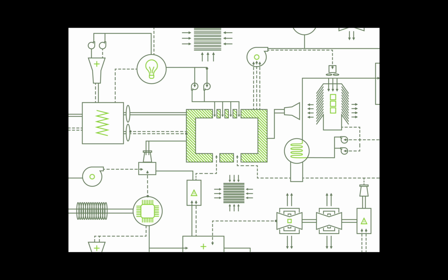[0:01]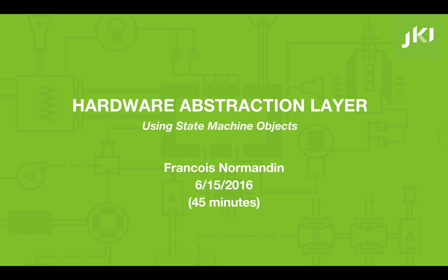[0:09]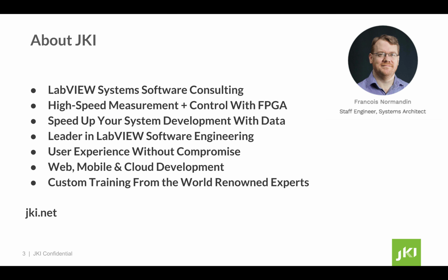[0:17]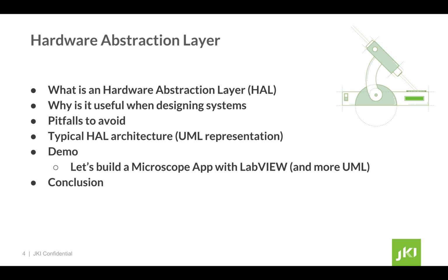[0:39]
As part of this presentation, I'm going to first define what is a hardware abstraction layer, why it's useful when designing systems, some pitfalls to avoid, and typical architecture for hardware abstraction layers, including some UML representations. Finally, I'm going to build a Microscope app with LabVIEW in order to demonstrate how to implement a hardware abstraction layer. For that, I'm going to use state machine objects.
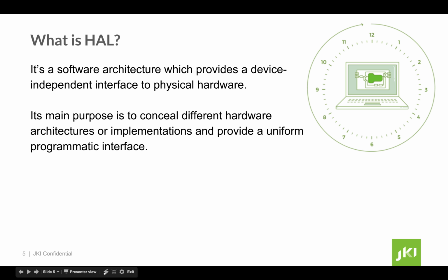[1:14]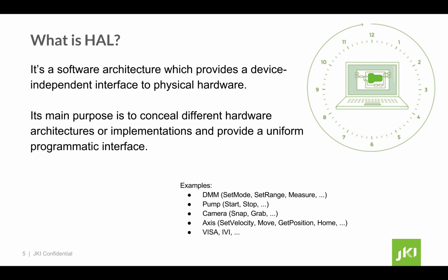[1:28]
What is a hardware abstraction layer? It's a software architecture which provides a device-independent interface to physical hardware. Its main purpose is to conceal different hardware architectures or implementations and provide a uniform programmatic interface. Some examples of hardware abstraction include general concepts like a multimeter, or pump, or camera, or an axis. These very generic categories of instruments allow us to define a generic interface, such as start and stop, or measure, or grab image.
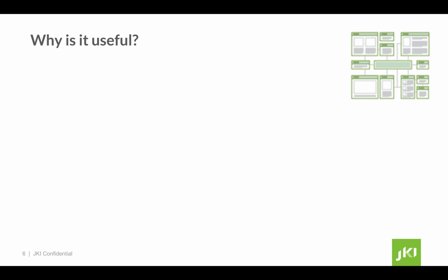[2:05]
Through the use of a hardware abstraction, we can then support multiple instruments of the same kind, and we can reuse different components in the same application. This leads us to why it is useful to use a hardware abstraction. First, it allows applications to access a common set of functionalities with little knowledge of the actual hardware implementation by virtue of communicating with hardware components in a generic way.
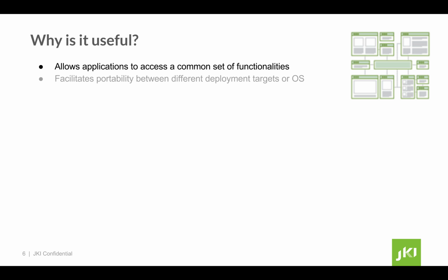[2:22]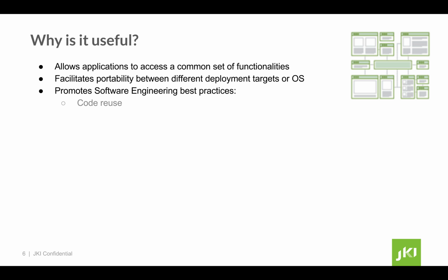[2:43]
It facilitates portability between different deployment targets or OSs. Think about CompactRIOs for your proof of concept and then migrate to a system on module or custom microprocessor-driven board. It also promotes software engineering best practices through code reuse. For example, parts of your hardware abstraction will be useful in test systems, others in manufacturing, QA and QC validation, engineering tools, and most likely in the final product itself. It's unit testable, and it's highly maintainable. And we'll see in the demo a concrete example of maintainability.
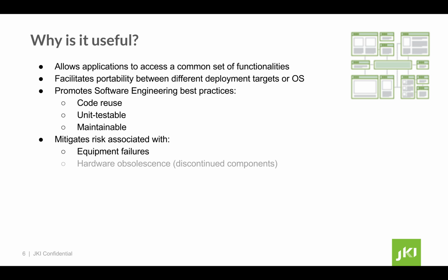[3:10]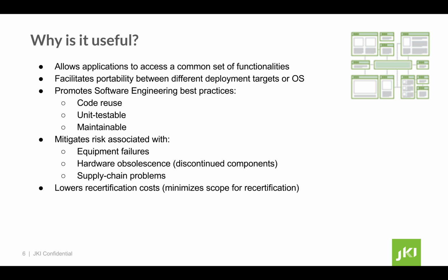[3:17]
It also mitigates risk associated with equipment failures, hardware obsolescence, like discontinued parts or components, and supply chain problems. For those in a regulated environment, it also lowers recertification costs by limiting the scope of tests to compliance for changing one component. And finally, it allows system, subsystem, and component response simulation.
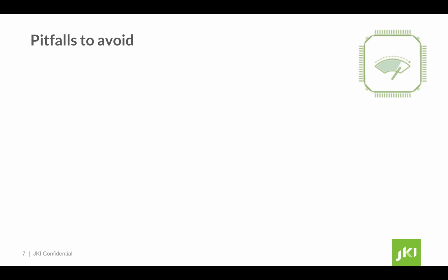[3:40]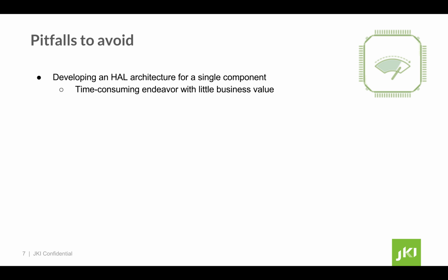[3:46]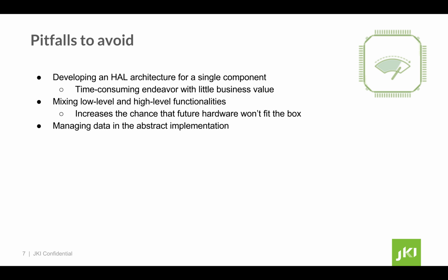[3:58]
Although a hardware abstraction is generally a good idea, there are some pitfalls to avoid, like developing a hardware abstraction architecture for a single component, which rarely makes sense. It's time-consuming and adds little business value. Mixing low-level and high-level functionalities increases the chance that future hardware won't fit in that nice little box that you've designed. Other pitfalls are managing data in the abstract implementation, or trying to make a HAL too generic on the first iteration.
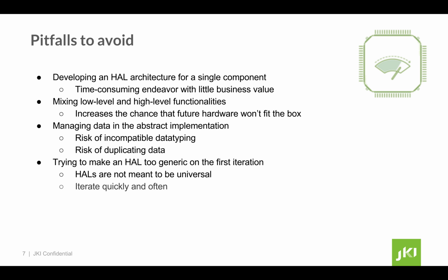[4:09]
HALs are not meant to be universal. If you find that your hardware abstraction doesn't fit your need, just duplicate the hierarchy and start fresh. For example, if we were to start with a sensor, a line CCD, and a scientific camera, they could all be considered digitizers, but it makes little sense from an API perspective.
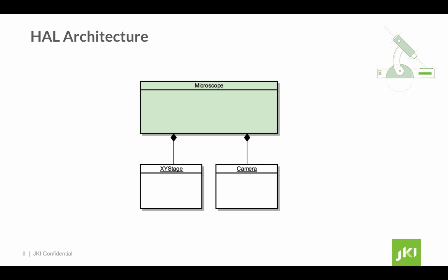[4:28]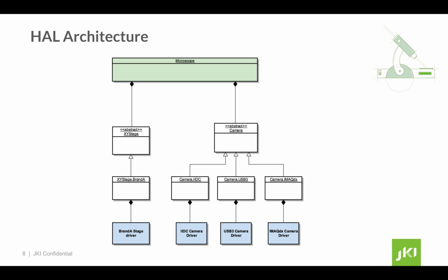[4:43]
Let's take the example of a microscope. At high level, it can be broken down into two subsystems, an XY stage and a camera. Expanding a bit more on that representation, let's explore how our subsystems can be broken down. Both the camera and the XY stage should act here as a generic interface to whatever type of camera or XY stage that we will face in the future. So it's really important at that point that we define an interface that makes sense.
Here we're expanding with different types of cameras and types of XY stage, each one will call a different driver. In that representation, we can see that the camera can be of 3 flavors. It can be an IIDC compliant camera, it can be a USB 3 camera, it can be an IMAQdx camera. Each of these specific implementations of a camera will call a different driver. Same thing for the XY stage.
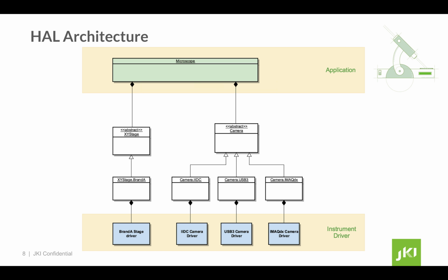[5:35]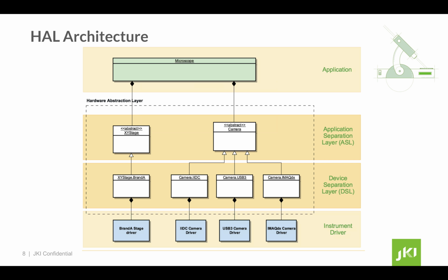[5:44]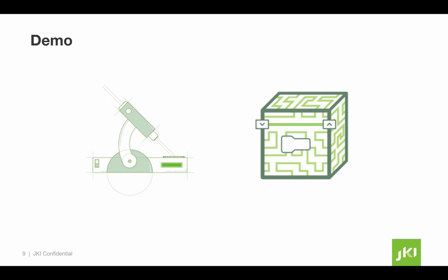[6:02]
To properly decouple our application and instrument drivers, we've just created a hardware abstraction layer. First, the application separation layer, which consists of abstract classes that provide a generic interface to the application. Second, the device separation layer, which implements specific functionalities and calls the hardware directly through the driver. And now it's time for a demo where I'm going to use state machine objects as an underlying framework.
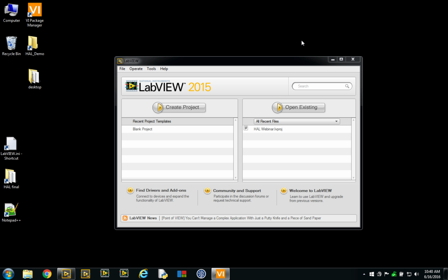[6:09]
As part of this demo, we're going to build a microscope, and let's pretend that we've got some requirements that require us to envision using a HAL, developing a hardware abstraction layer. For example, we've been instructed to build an instrument that will feature flexible hardware configuration, because already we've got to support multiple cameras in the lab, and we have 2 types of motorized stages for the microscope. So in the future, we want to be able to substitute hardware to achieve our objectives of performance improvement, cost reduction, but also we have different setups in R&D and manufacturing or production.
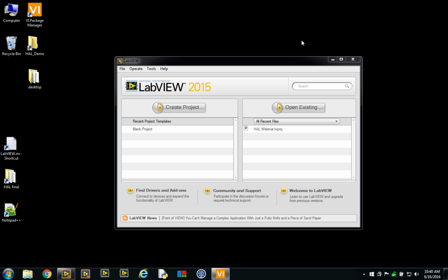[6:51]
We also have some hard requirements. At first, we need to use a certain specific camera, and for the purpose of this demo, I'll be just using my laptop camera, which I can control using IMAQdx driver. One of our goals will be to create very modular components so that we can test early and deploy.
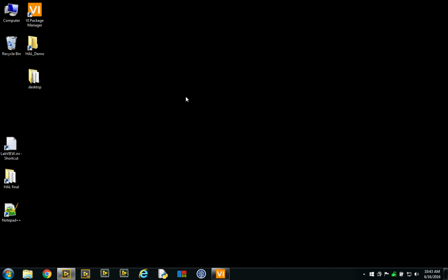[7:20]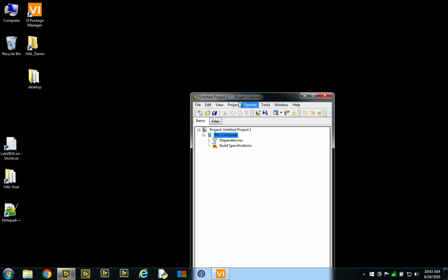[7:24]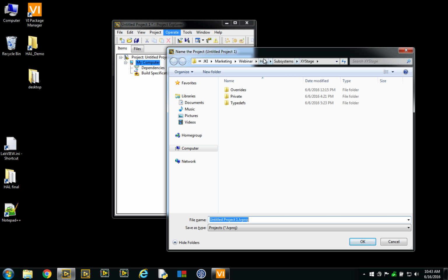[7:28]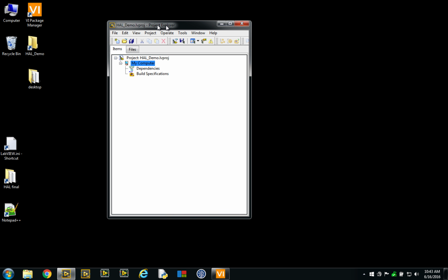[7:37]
Let's start by creating a new project. And for this, let's call this HAL demo. So the first thing I'd like to do is build a camera subsystem.
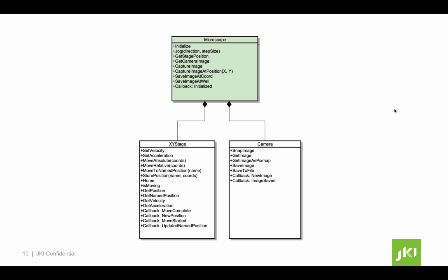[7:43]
So we're back with our UML diagram, which I've expanded with all the public functions that are going to be needed to implement our microscope. As you can see, I've detailed the camera with the public method snap image, get image as pixmap, save image or save to file, and I've also added some callbacks for events on new image and image saved. Same thing for the XY stage, where we're gonna have to set velocity, acceleration, move, all the usual stage or axis type of functions.
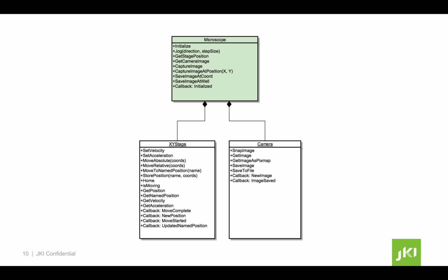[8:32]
At higher level, our microscope will need to initialize, jog to certain positions by calling the XY stage, get the stage position or get a camera image directly from calling the camera, but then also some composite functions like capture image at position, where it's going to call successively the XY stage, and then when the move is complete, we'll snap an image, get the image from the buffer, and wait for the image to be retrieved. And obviously save image at coordinates or at well in the case where I've got a well plate installed on my microscope. But those are features that both will call the camera and the XY stage.
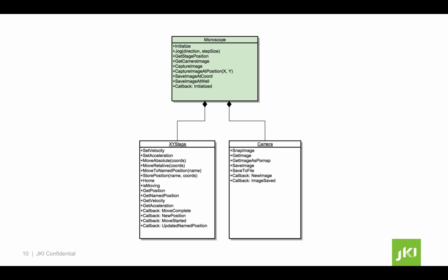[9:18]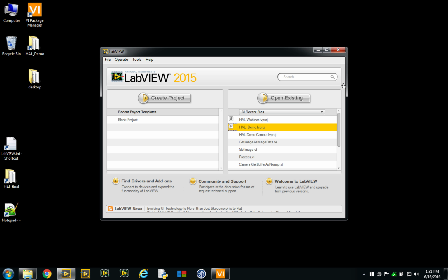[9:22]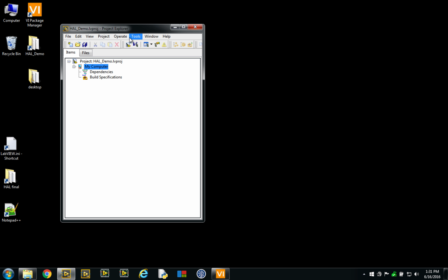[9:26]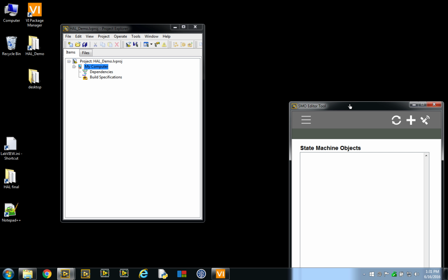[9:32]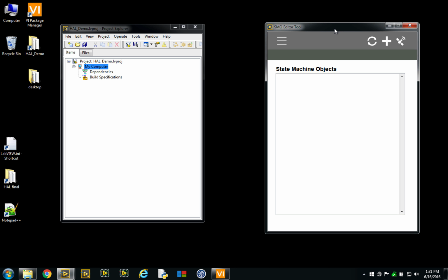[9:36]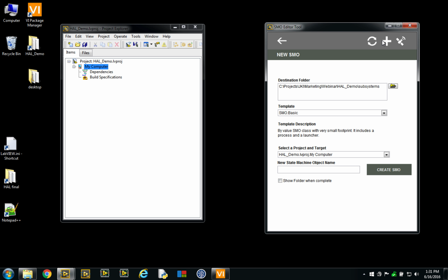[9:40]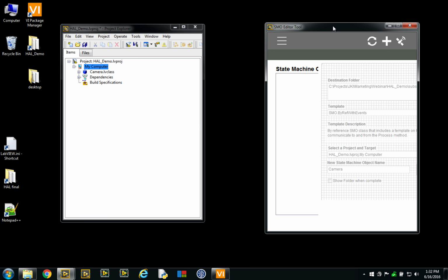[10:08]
I already prepared a HAL Demo empty project to proceed. So the first thing I'll do is I'll use our JKI State Machine Object Editor. Now, because this is not a State Machine Objects webinar, I'm going to go over this very quickly so that we stay on topic. Basically, I'm going to create a new camera subsystem. So create SMO. I'm already set up to go to the right folder destination, and it's going to be adding this camera class, which is my abstract class, to the project. I'm also going to add right away the XY stage and the microscope classes.
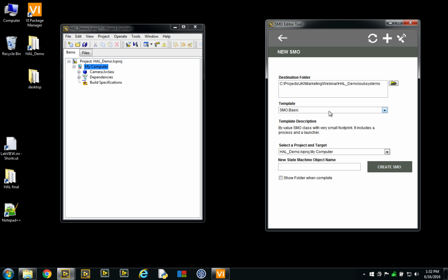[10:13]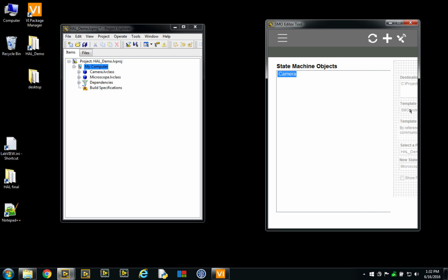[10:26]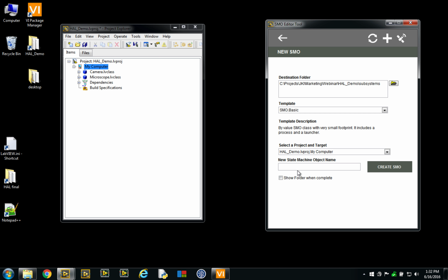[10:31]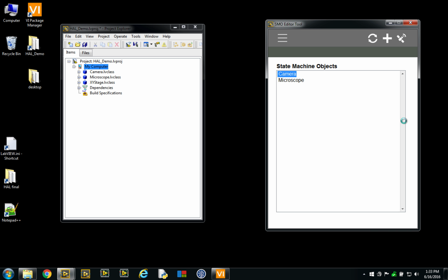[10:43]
Now these three subsystems mimic our UML diagram so far, where we have basically the microscope, which represents our application, and the camera and XY stage abstract classes are our application separation layer. We will postpone for now the development of any device separation layer, more specific classes such as the Camera.IMAQdx that we're going to do later on, and we're going to focus on preparing our public API, what will be the application facing interface.
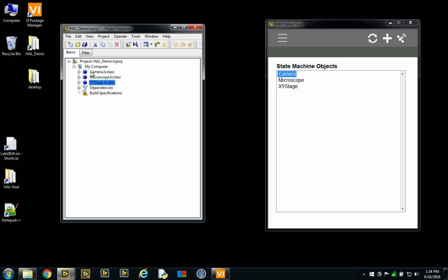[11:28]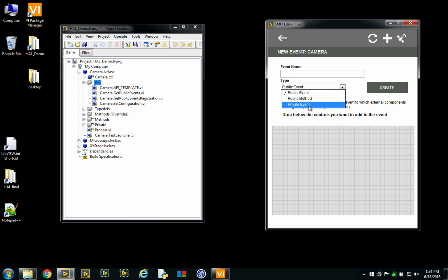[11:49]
To do so, I'm going to take as an example the camera. And going to the API, I know that the API of the camera will have, like we discussed earlier, a get image as pixmap, or save image, for example. So again, using the editor window, we can go and add a public method that will get image. And at this point, I expect that my images will be stored in buffers. So my buffer, for example, here is the only argument that I'm going to need. As you can see, my get image has been created.
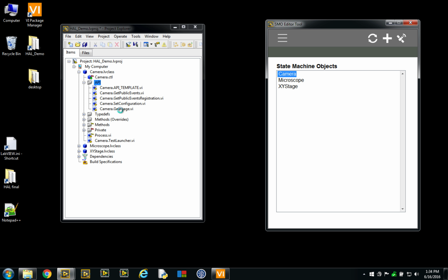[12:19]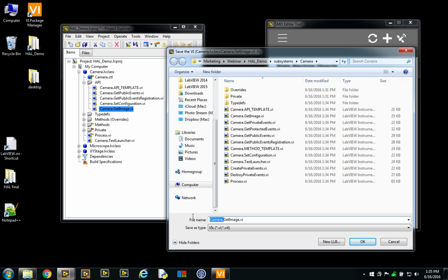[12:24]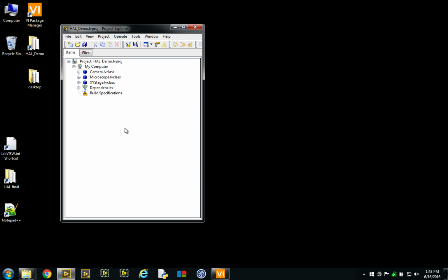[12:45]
And one thing that I personally prefer is to remove the namespacing from the public API and keep namespacing only for those methods that might interfere with the parent. But get image, the parent of camera, is just an instrument that doesn't get image, so I think I'm safe naming it get image.
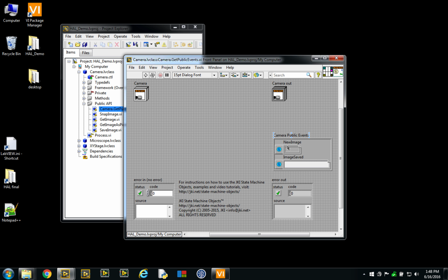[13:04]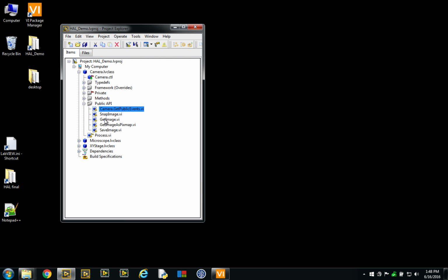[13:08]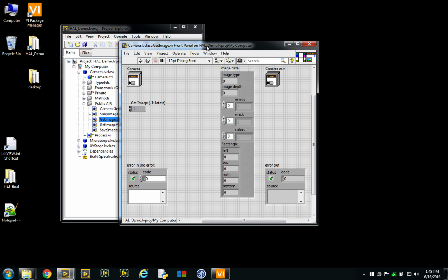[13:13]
Okay, at this point, I fast forwarded to continue basically with the camera API, microscope, and XY stage APIs. As you can see, I've completed get image as pixmap, snap image, save images, and I've also added the public events for new image and image saved. So I'm going to go into it just to show you what it looks like. The get image will get the image as an image data, and I will provide a buffer number.
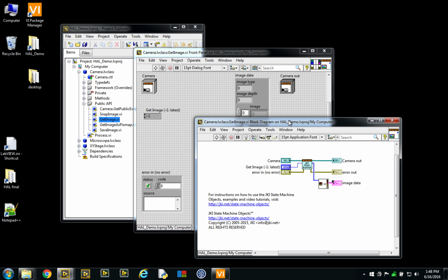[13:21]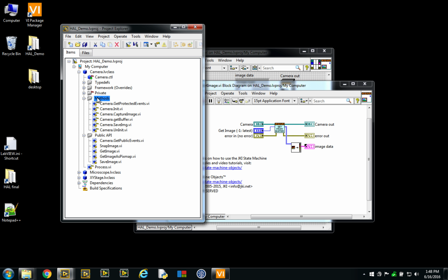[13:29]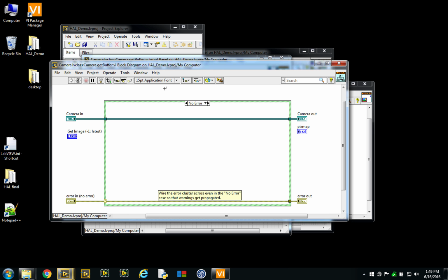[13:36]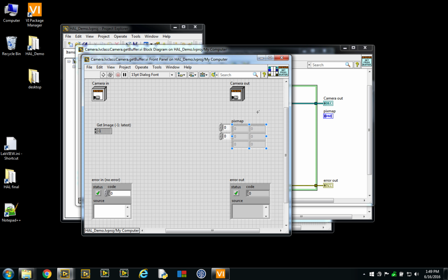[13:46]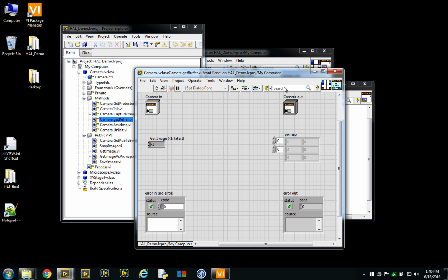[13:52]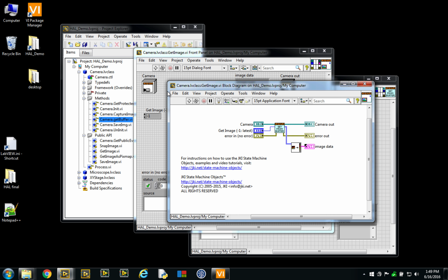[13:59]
Inside, I'm wrapping a protected method, which I've put into methods here. And this one is getBuffer. GetBuffer will be the method that we will override in the device separation layer to provide direct functionality, a direct call to the drivers. In this case, you notice that a more generic call for a buffer is, instead of an image data, to have a pixmap. So my public function will just translate the pixmap to image data to provide the public-facing data type that a developer might find useful.
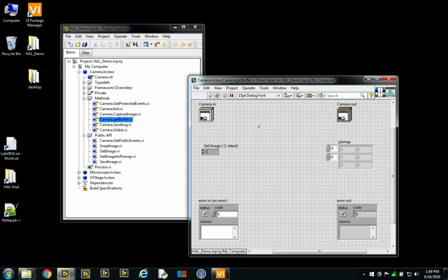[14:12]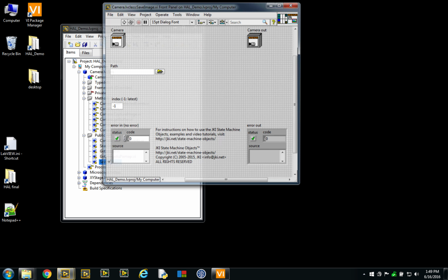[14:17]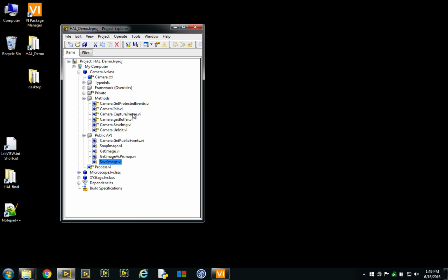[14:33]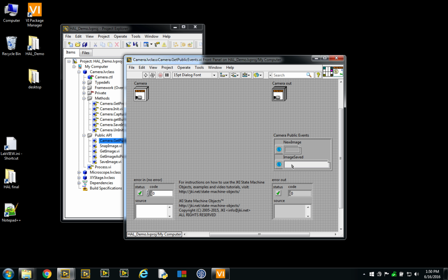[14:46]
And I've done the same for save image, for example, where in this case, save image will send a message to the process, and the process, on reception of save which buffer, probably the latest, with a path, will do the work and fire an event that is image saved. So anyone that is listening to these public events here will know that an image has been saved at a certain path.
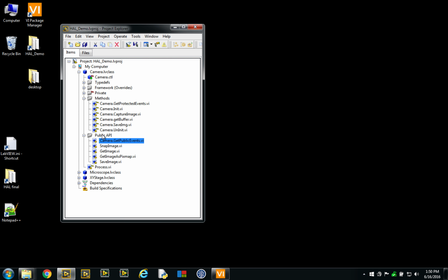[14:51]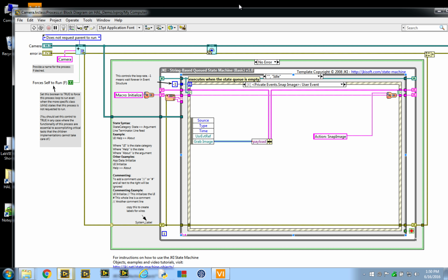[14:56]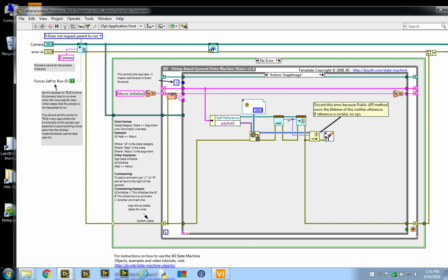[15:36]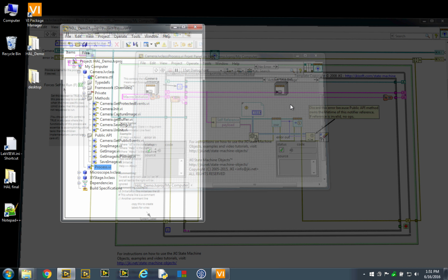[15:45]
I'm going to open the process. So the process is essentially the actor of the state machine object. It will receive commands through events, in this case snap image or save an image, and it's going to perform an action. So going through the process makes sure that we can serialize actions and make them asynchronous, so we don't have to wait for the image to be saved on disk, which might take time. The API, basically through the user interface, will not be blocking in this case. Same thing for snap image. We will receive a snap image function, call the action to actually snap the image, get the buffer, and fire an event to say that, yes, we've got a new image at this point.
What are the specific functions that a more specific camera will need to perform? Well, it's going to need to initialize and uninitialize. It's going to need to capture an image. It's going to need to retrieve an image from the buffer, and it's going to need to save an image to disk. So these are the basic under-the-hood functions that are being called by my public API.
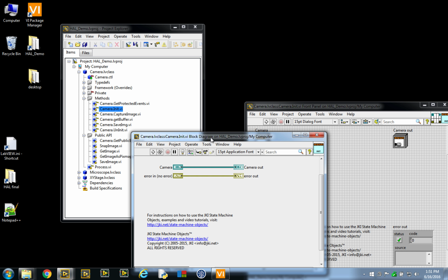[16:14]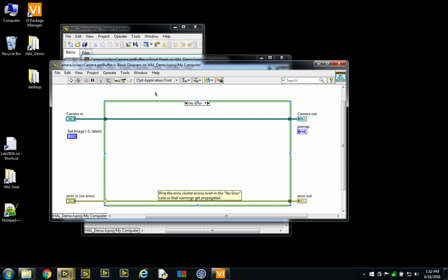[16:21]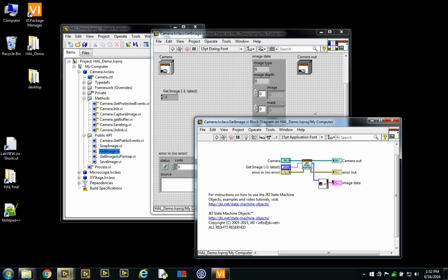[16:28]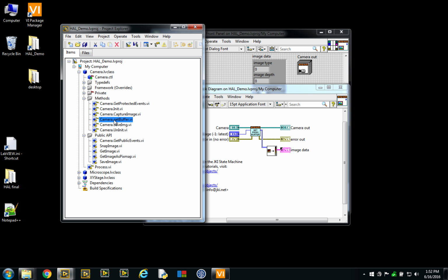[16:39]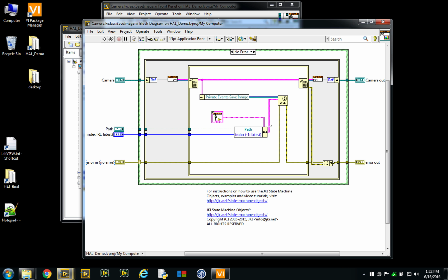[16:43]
And just to prove that this is really an abstract class, I can open all of these. They are all the same. And essentially a get image, because it's a direct call from buffer, which means that it's probably going to be non-blocking. You can call the get buffer method directly here instead of sending a request to the process to do something serially.
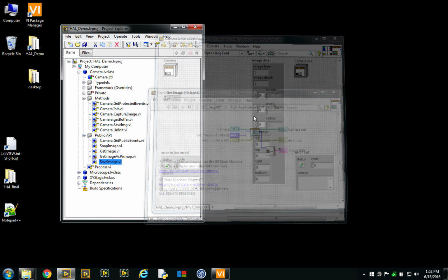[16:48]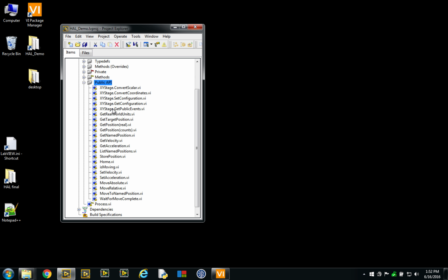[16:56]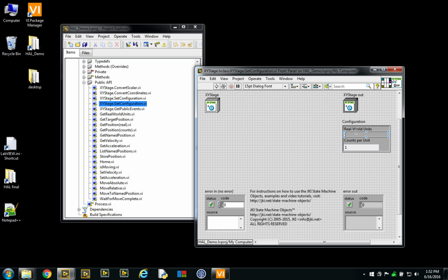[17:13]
Now, for expediency, I've done exactly the same here for the stage. As you can see, the stage has many more methods. We had seen that already in the UML diagram, where we can get the target position, get the real position, and I've also added in here, just for the sake of the demonstration, a configuration where we have the real world units, which would be, for example, meters or millimeters, and the number of counts per unit. So this is a double value, meaning that it can be fractional.
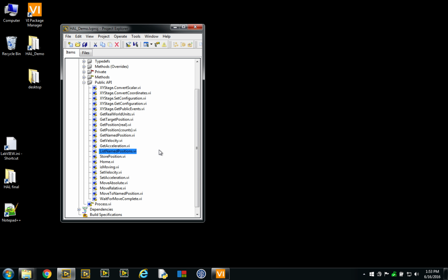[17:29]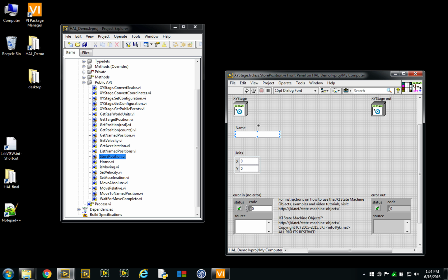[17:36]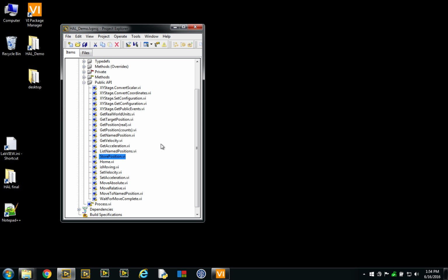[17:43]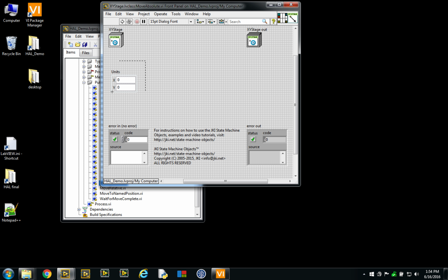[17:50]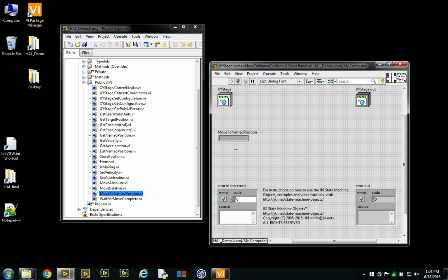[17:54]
Among other utilities that I've implemented are list named positions or store position. Essentially a way to set a position by name and store some units, some coordinates. And that maps well with move to a named position, where instead of providing directly a move absolute with the coordinates, we would give a named position, retrieve it from configuration, and if it exists, then do a move absolute.
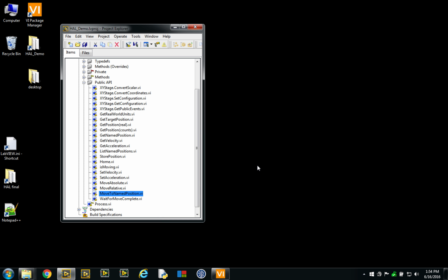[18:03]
Okay, let's sort our project a bit into concepts. We know that our application will be the microscope, and we have our application separation layer that is ready here. I might as well take this opportunity to show the API for the microscope, and let's go with capture image at position. As you can see, I've separated this as a synchronous call and an asynchronous call.
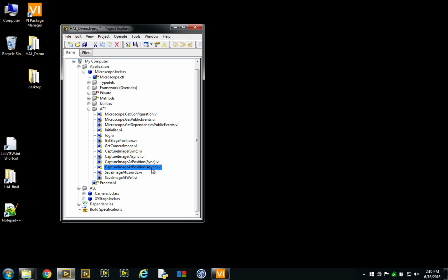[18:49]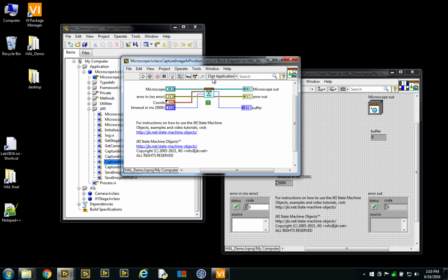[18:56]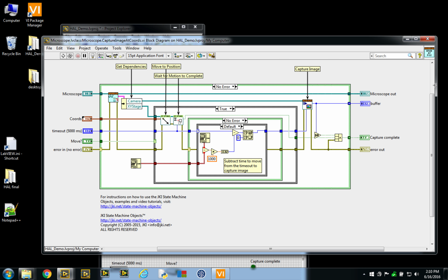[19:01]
The only difference is that the asynchronous call goes through the process. So for this demo, I thought that maybe it would be simpler if we just called it directly, which obviously for instruments I would not be tempted to do unless it's really for testing, as in this case. But as you can see, our microscope has the real difference that we've got dependencies on the camera and the X, Y stage, as we saw in our UML diagram.
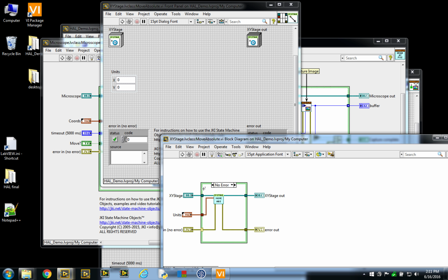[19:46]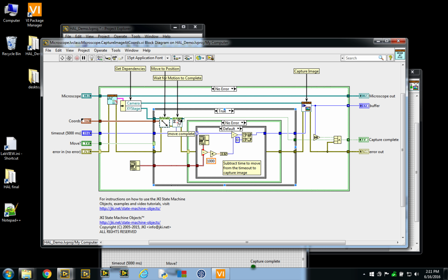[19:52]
These are the references to both our subsystems. A capture image at coordinates requires us to move to those coordinates and wait for the move to be complete. So that means that even if this move here is asynchronous, like in this case, it is not. It's a synchronous call. But if it had been asynchronous, we could have waited for the move to be complete.
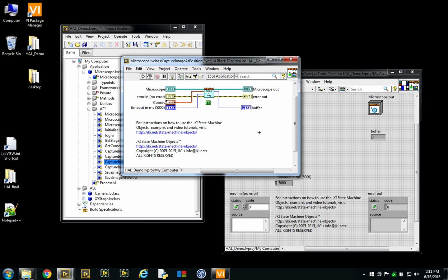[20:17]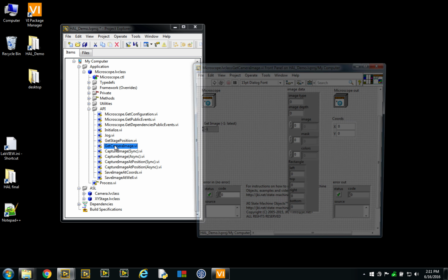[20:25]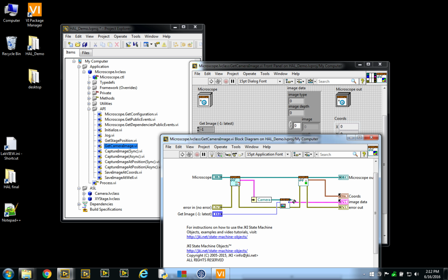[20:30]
And this is just a scheme here to subtract the timeout, to divide it between the stage moving and the camera timeout. So again, we capture the image. When we have the buffer, we can say that the capture has been complete and return the buffer value. Once our microscope knows that we have acquired successfully, then we would call the get camera image with that same buffer number and retrieve here our image data at coordinates.
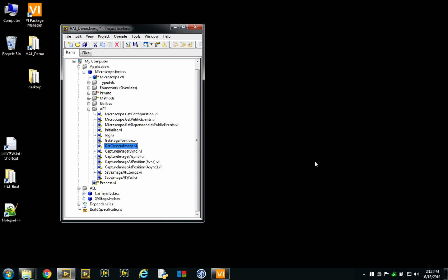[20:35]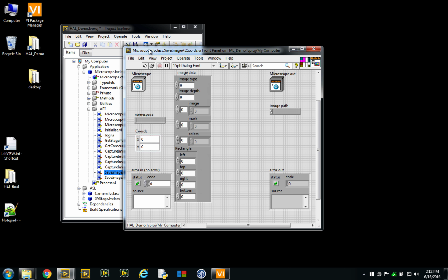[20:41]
A bit of the same has been done for saving an image. In this case, we already have the image, so the microscope can directly save to disk using its own API instead of relying on the camera's functionality.
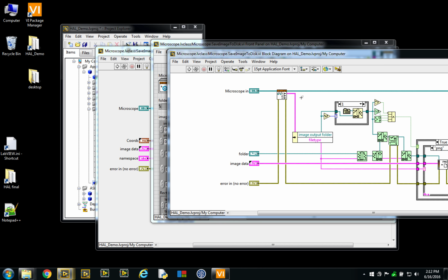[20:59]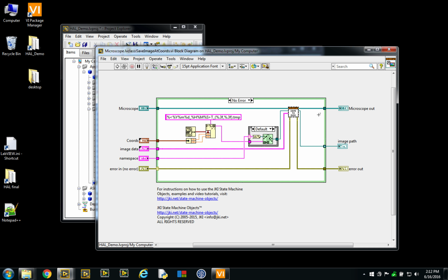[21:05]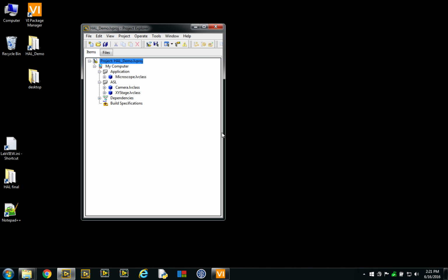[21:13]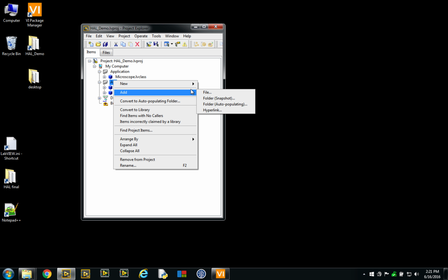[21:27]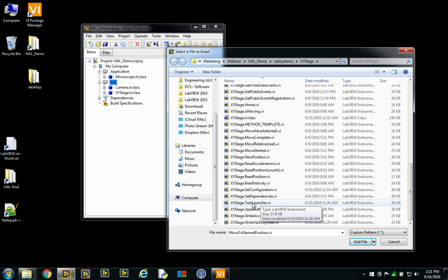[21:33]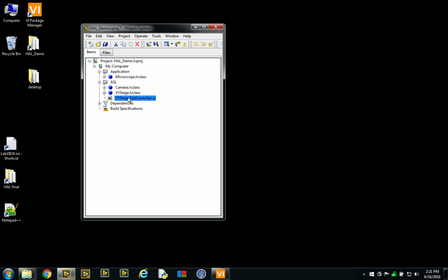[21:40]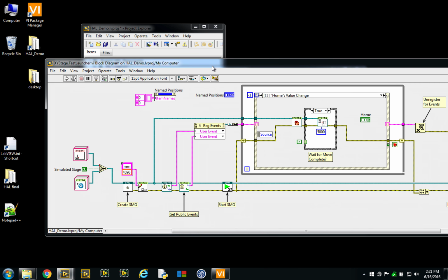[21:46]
Now, before we move to the device separation layer and building our first specific object, I'd like to retrieve a bit of a VI that is being created when we create a subsystem from the editor. There's always a test launcher that is being called, and in this case I've already added the public API to it.
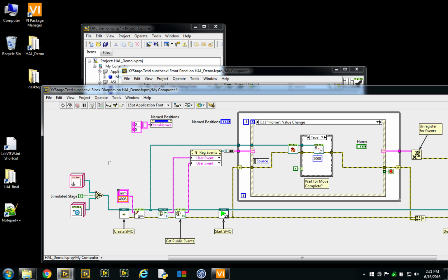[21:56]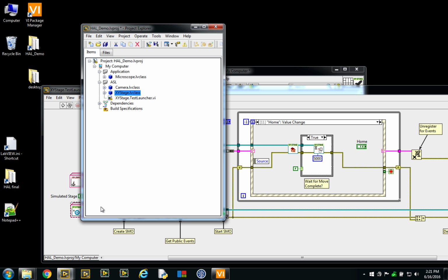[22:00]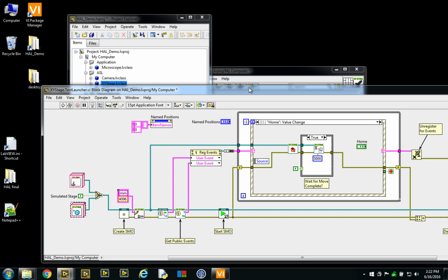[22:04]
So as you can guess, I'll have a simulated stage later on, so you'll excuse me if I've already prepared it. But essentially, if we call the XY stage, and I'll show this class, this is really our class here that we've already explored. The goal is that any VI that is not part of the class will only be able to call the public API to that class, and that provides us with a kind of a playground to make sure that our class works the way it's supposed to.
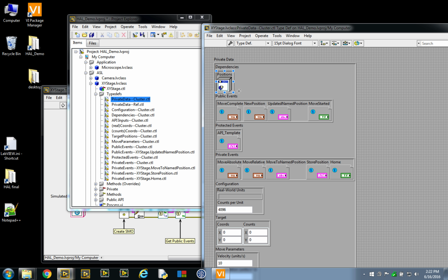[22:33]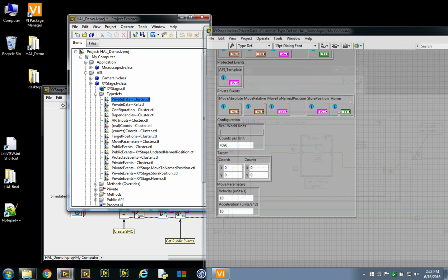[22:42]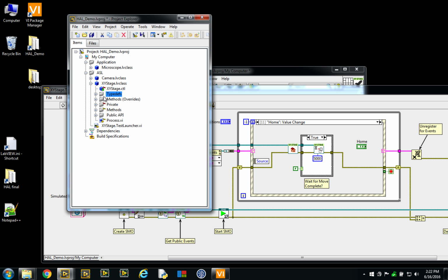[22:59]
So one particularity with the XY stage that I haven't mentioned before is that as part of the private data, I've added the coordinates in both real world units and in counts, and by doing so I can very easily simulate a position. In the degenerate sense, when there's no actual motion, if we assume that the motion is completed, we can just read the target position and substitute it for the real position, and that gives us a very, very quick way to assess if our logic for a positioner would work. For example, move absolute position would set those target coordinates, and then when we say read position, we would read the target. Therefore, we've already arrived at our destination. So this is a trick for simulating real world objects that I use very often.
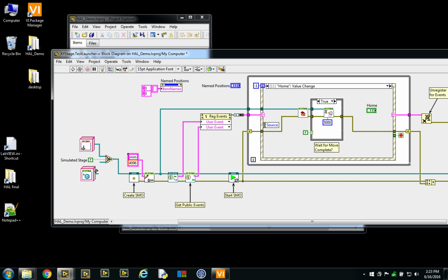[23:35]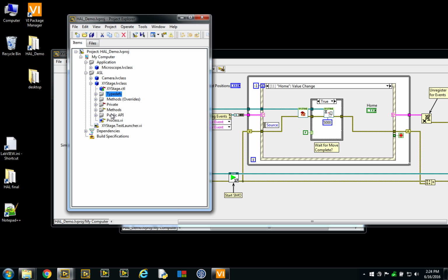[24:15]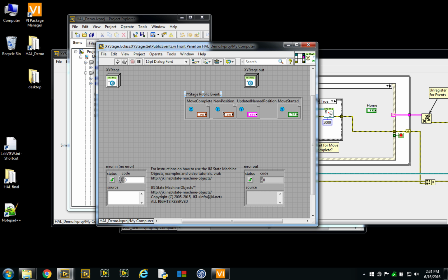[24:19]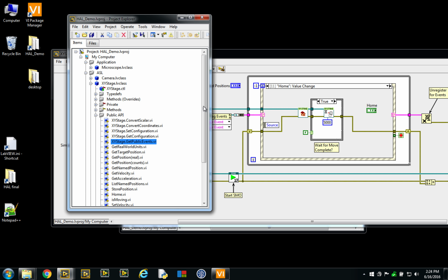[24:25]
So in this case, let me go through that diagram here. At first I'll just forget about the actual simulated stage for now and have our real stage. We create the state machine object, and that's really just creating the references. Then I'm setting the number of counts per millimeter in the configuration. I'm then looking for the public event to know when the state machine object will stop, start, or change state. And I've got my own XY stage public events, which I'll be listening to, and these public events are the ones that we've defined as part of our public events here, which are move complete, new position, I've updated the name position, and the move has started, true or false.
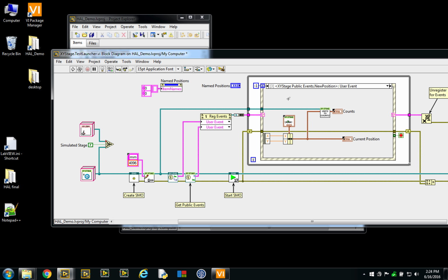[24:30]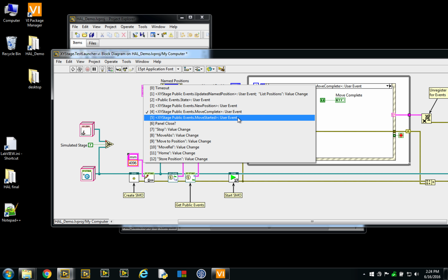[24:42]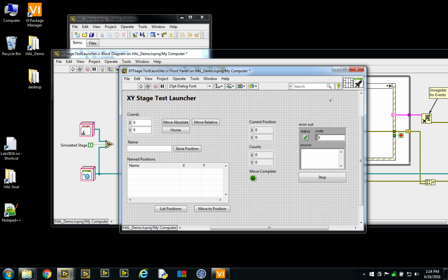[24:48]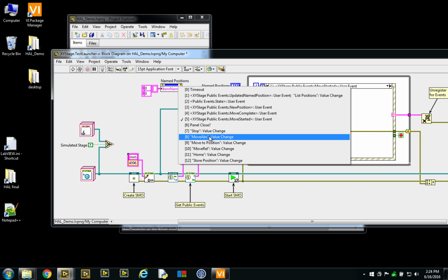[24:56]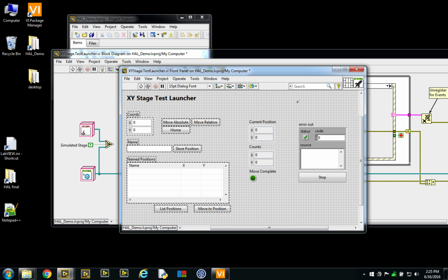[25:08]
So at that point, I'll be listening to all these events, and I can show it here. Whenever there's a new position, I'm going to display it and convert it to counts as well. When the move is complete, I'll say that it's complete. And when the move is started, I'll just say that the move is not complete. Essentially, that's going to tell me, with these being indicators and these here exercising my public API, where I can use move to absolute position, move to a certain named position. I can also move relative.
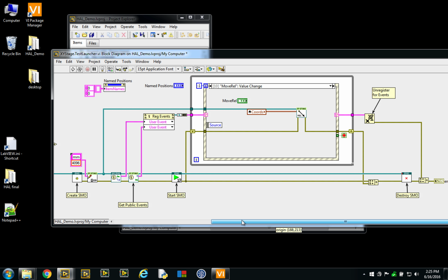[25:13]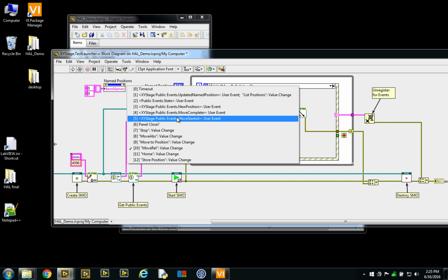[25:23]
Then we move on. The rest of our test launcher is really just starting the state machine object, which is kind of launching the process asynchronously in a sense. And at the end, when I get that the state is stopped, then I'm going to destroy the object.
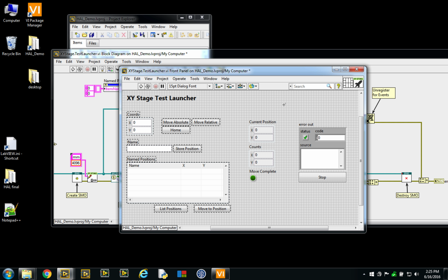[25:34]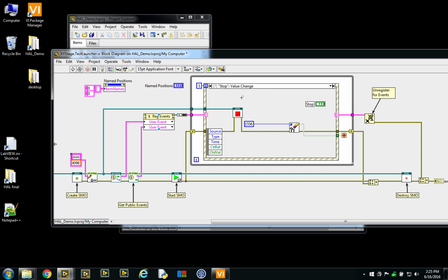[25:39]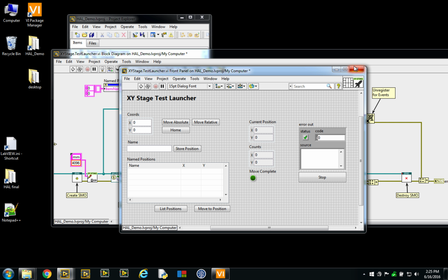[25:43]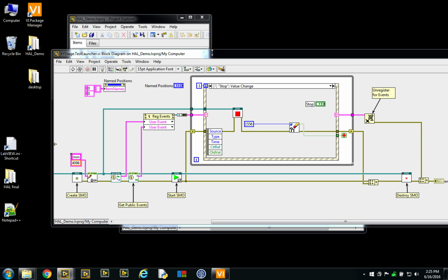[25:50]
Oh, and by the way, how do we stop the object? That's because I've got a value change event for stop, or I've decided to close the VI. So I think I'm ready to launch this little tester. If I say that I want to go to 5.5 and move, then as expected, we're already there. We move home, it goes back to 0, move relative, and we see that it works.
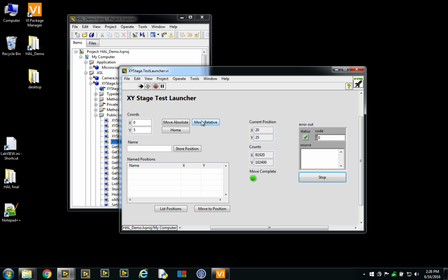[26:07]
All right. Another thing is if we say 0, 0 is called base, and 0, 10 is called position A, then we could say move here, move there. So this little test launcher has shown us basically that our base class responds just the way it's supposed to.
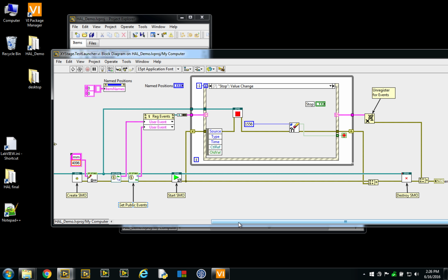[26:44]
Now we should do exactly that same test launcher, but with whatever classes we come up with, whether we're connected to real hardware or we have a simulated stage that actually does some real-time simulation of, for example, acceleration, velocity, and things like that, to see if all our timeouts and our asynchronicity works correctly.
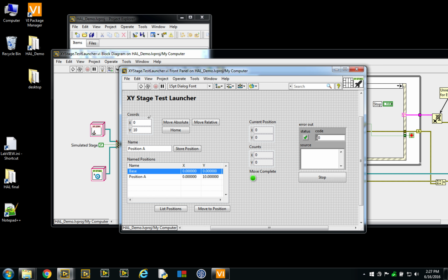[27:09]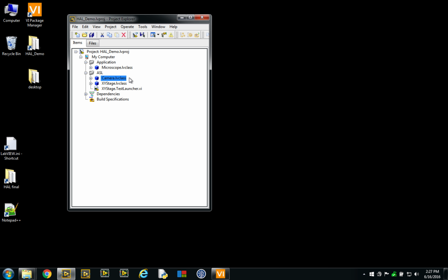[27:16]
Now, for a camera, obviously, there's no such thing like a target position and retrieve it to read the actual position. So we actually need to use images. So the first thing that I'll do is that we're going to create a Camera.IMAQdx so that we can use my laptop camera and see if we can make the same XY stage test launcher into a camera test launcher, which works.
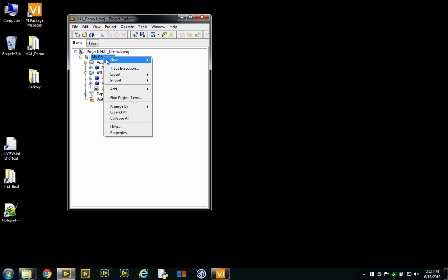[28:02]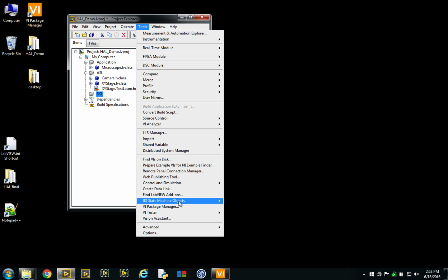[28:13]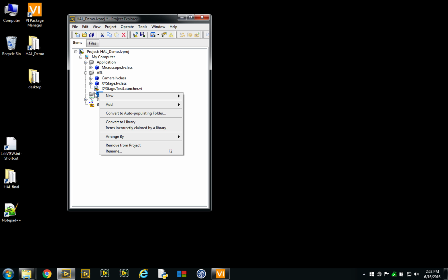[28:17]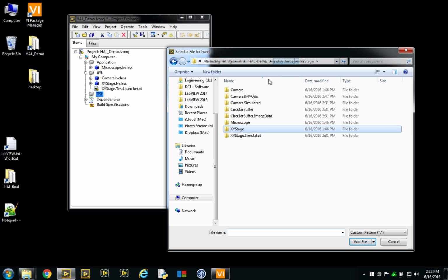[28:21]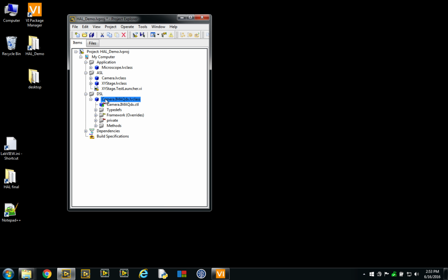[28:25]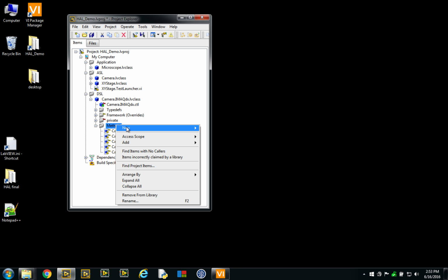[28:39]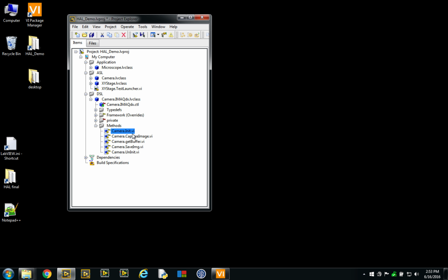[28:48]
Okay, so we are ready to create our first device separation layer object, which will be our Camera.IMAQdx. Put that into the DSL here, and again, using the SMO editor, you would create a Camera.IMAQdx. I've already created that so that it's going to be a bit faster. And because this is a more specific camera, all we need to do really is to override these 5 VIs that would not be created by the template. So you'd have to select VI for override, and here you would select all those that are relevant. In this case, camera.init, Camera.UnInit, and etc.
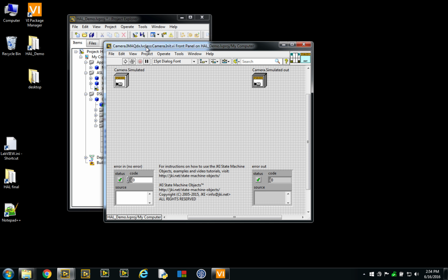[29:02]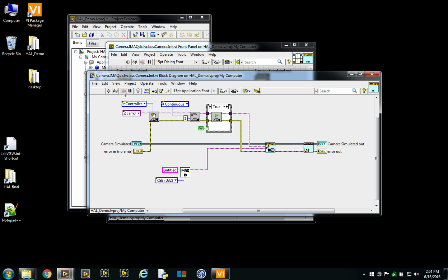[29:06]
So the first thing, as part of my IMAQdx, I need to create references. So to initialize a IMAQdx camera, we'll be calling directly the driver, and one particularity is that you need also an IMAQ container for the image. So in this case, I'll just create a generic U32 RGB container because my camera is an RGB camera. However, if you wanted to make that more generic for your use, you might want to add a bit more logic here and insert maybe an image class that contains whatever type of image your camera is actually configured to produce. In this case, I went pretty straightforward.
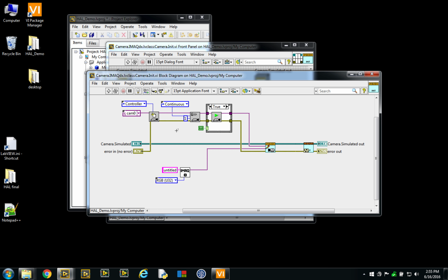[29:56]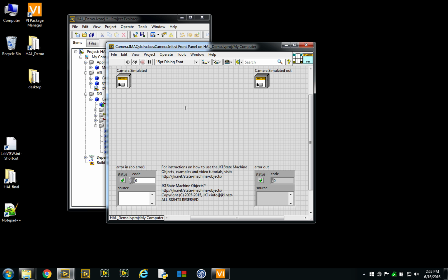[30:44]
So again, that goes into our discussions about the pitfalls of a hardware abstraction layer. If you want to spend time upfront and cover all the different use cases where, hey, this is a camera that can do any type of images, any type of outputs, any resolution, 14 bits, 16-bit cameras, 8-bit cameras, color cameras, infrared cameras, whatnot, that seems like an overkill. You might be better off doing a color camera abstraction or a 16-bit scientific camera abstraction, something like that. Anyway, you'll figure that part out for your own application.
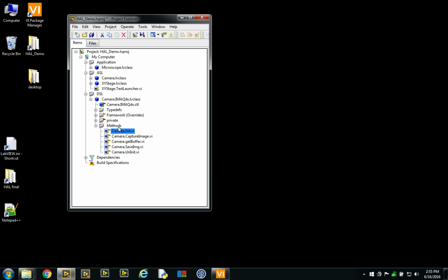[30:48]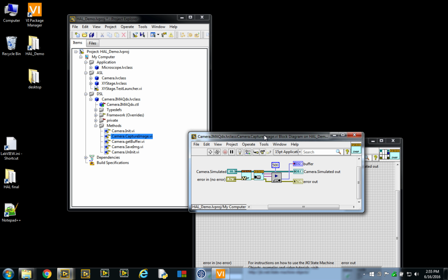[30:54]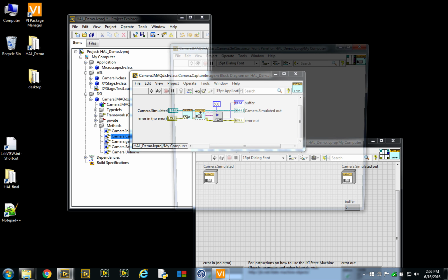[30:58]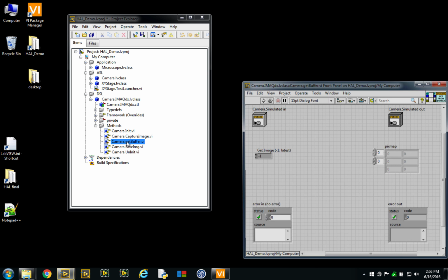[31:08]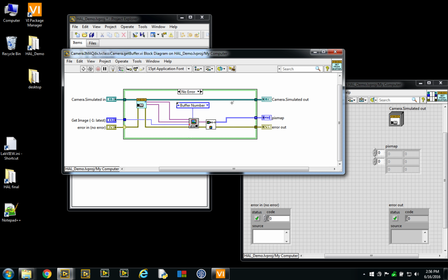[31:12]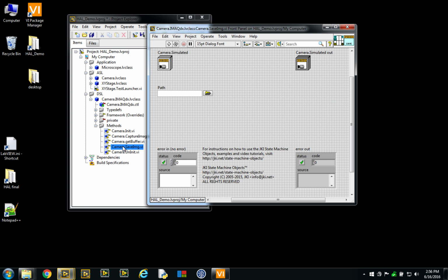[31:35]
In this case, I've simply overwritten capturing the image, and again, that is just an accessor to get my references, and I just drop the nodes. So very, very simple to create that IMAQdx specific camera. So you can see I know that I need to match with my PixMap, which I had chosen early on as my main format to retrieve from buffer. So I've got a buffer number here. I take my image and I convert it directly to pixel, and that's going to map nicely.
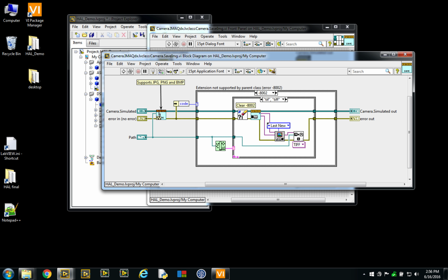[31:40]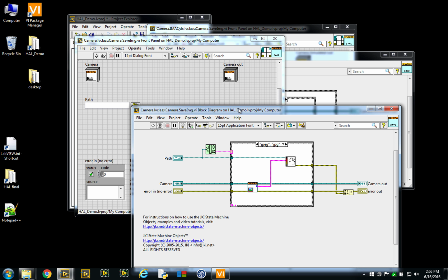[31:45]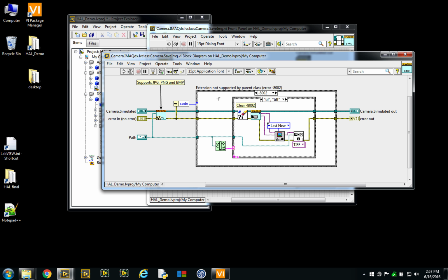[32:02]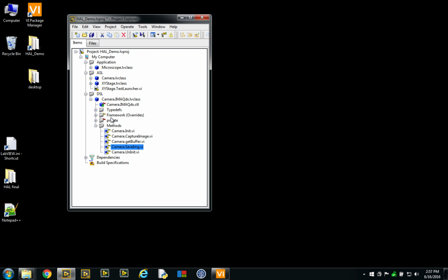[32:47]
Now, one thing from using the base class that I didn't show before, but I had created a simple save image where if anything can be saved to, you know, PNG, JPEG, or bitmap from an image data, then I would do it. And otherwise, well, I'd say this extension is not supported. So I decided to support one extra type here, because IMAQdx includes also saving to TIFFs. So because bitmaps, JPEG, and PNGs were already supported by the base class, if there were an error saying that it's not supported, then I would check here if we either stand with our error message because we cannot override for that format, or hey, that's good news, we can provide, you know, an extra functionality here. So we'll clear the error and just retrieve the buffer and go straight to TIFF from IMAQdx. That's one of those pleasant things with objects.
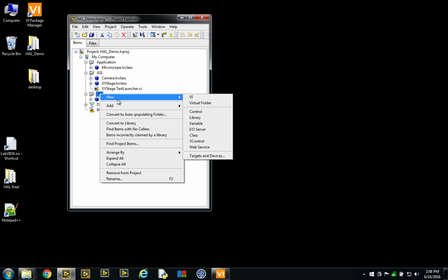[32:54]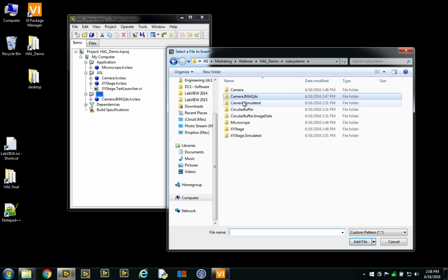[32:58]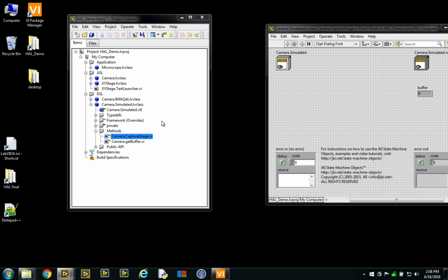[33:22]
I've also made a camera simulated previously, and the purpose of this is just to show how easy it is to swap between two specific types. So our camera simulated, all it does really is that instead of capturing an image, it captures it from a buffer. And so I've created a circular buffer as part of my dependencies.
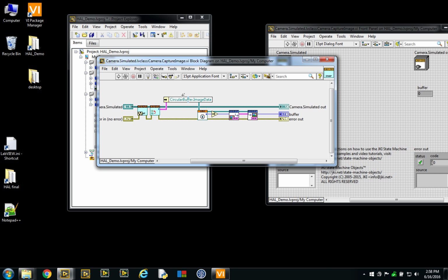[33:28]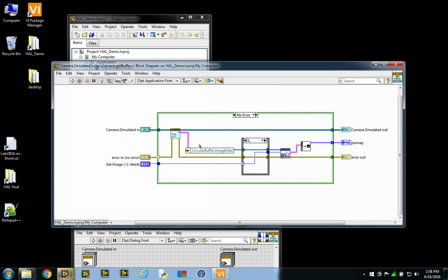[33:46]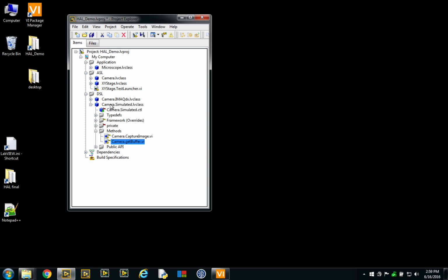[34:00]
The circular buffer is configured to retrieve images from disk, and basically my buffer number becomes my index to retrieve that image. So I get the image, I have a new element index, and I fire the buffer. So get buffer is exactly the same thing, where from my circular buffer, if I've got an image, I get it by index and I publish to PixMap. That's it. Very simple.
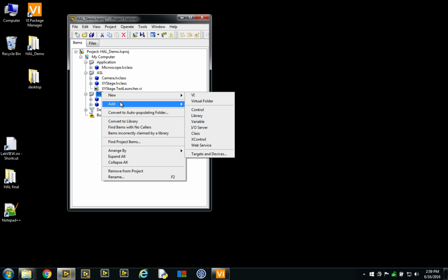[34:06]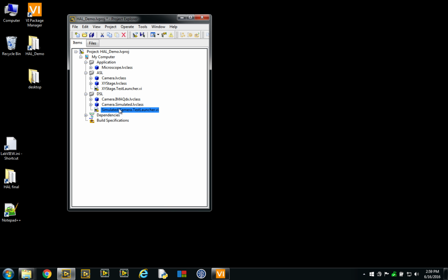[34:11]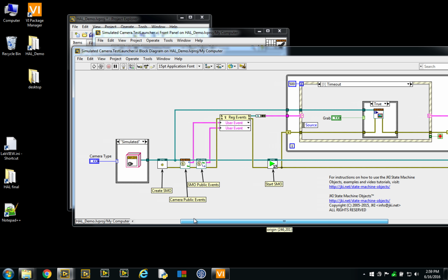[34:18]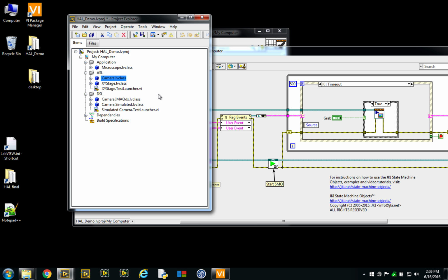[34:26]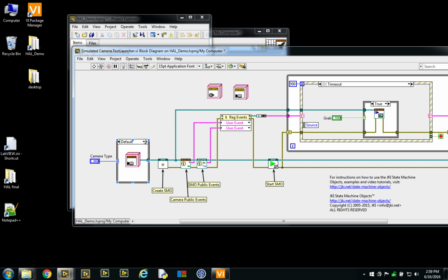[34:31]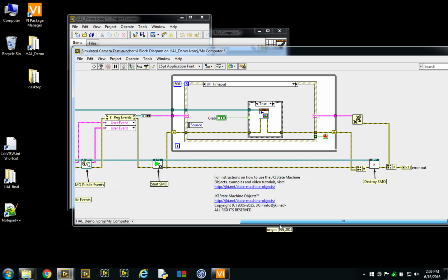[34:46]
And I promised a test launcher for those, so I've added IMAQdx and simulated as a factory, so it's very simple. If I've got a default, it's going to be my camera class. Otherwise, I'm going to have either my IMAQdx or my simulated camera. Again, same pattern for the state machine objects. We would create the SMO, register to the public events, and then start the process, the asynchronous process.
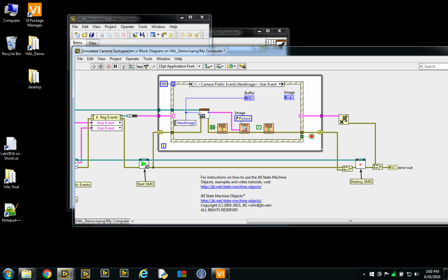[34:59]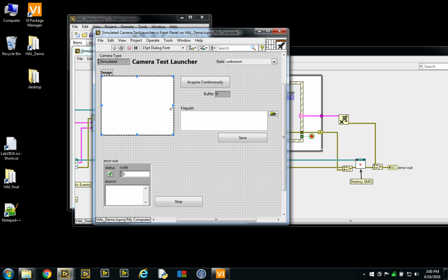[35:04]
On stop, we can destroy, and we can send a message exercising our API, and if there's a new image, we retrieve it, and then I've just got a picture control here to fit into the box. So here I'm ready to test, and IMAQdx. Now I can confirm that my little light tells me that I'm being videotaped right now by my camera, and I'm going to just hit the acquire.
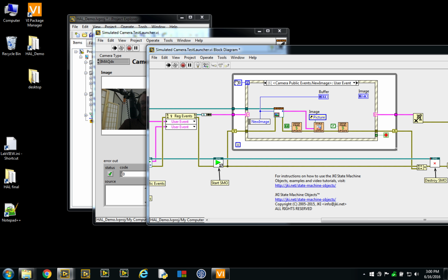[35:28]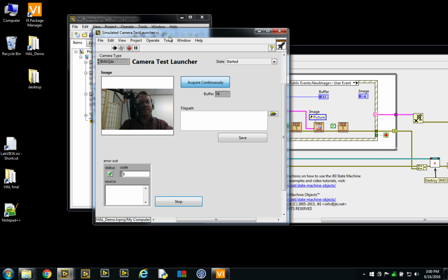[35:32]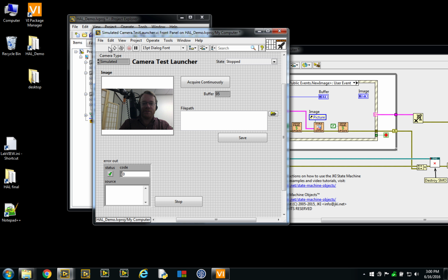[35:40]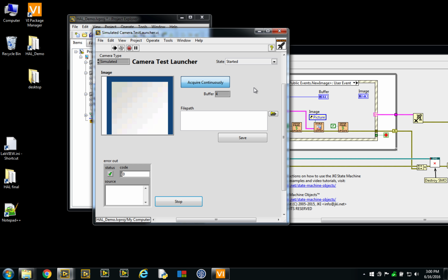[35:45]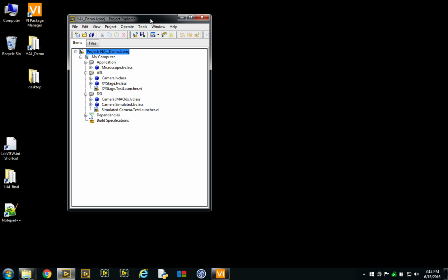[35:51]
So you can see that we've got one image every 50 milliseconds, so it's a bit chunky, but that really tells you that it's actually working. And then if I go to simulated, and I acquire, there you go. So that comes from my buffer of images on disk. So we almost have all of our device separation layer complete now, calling instruments.
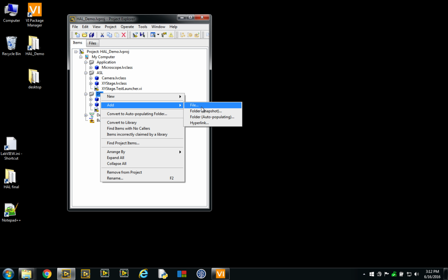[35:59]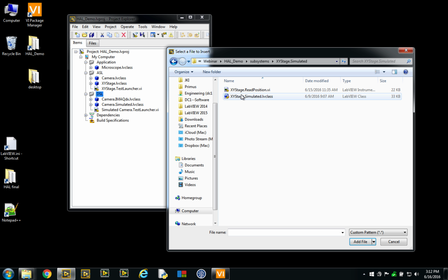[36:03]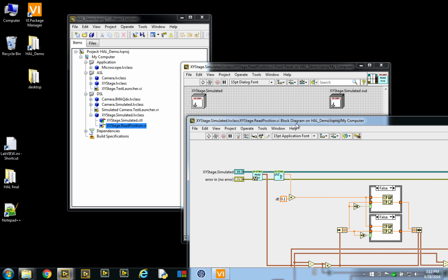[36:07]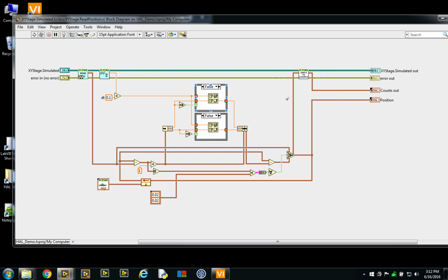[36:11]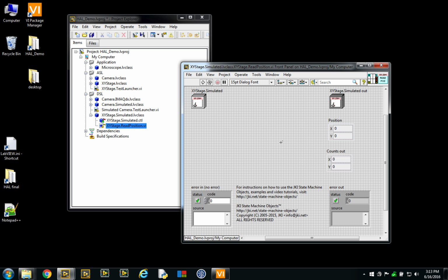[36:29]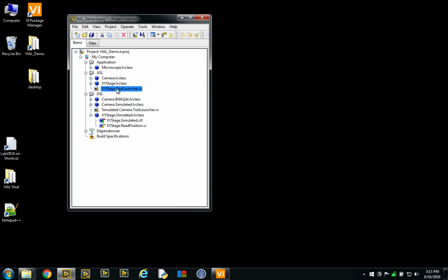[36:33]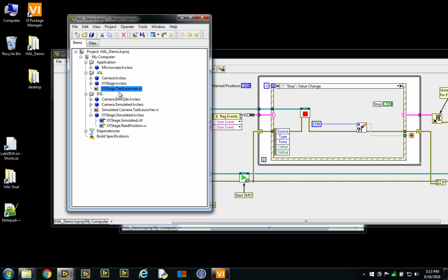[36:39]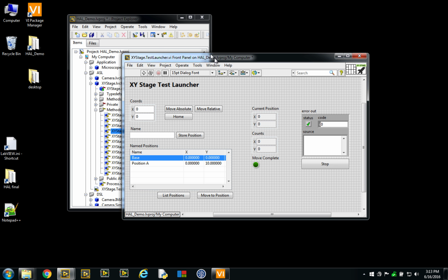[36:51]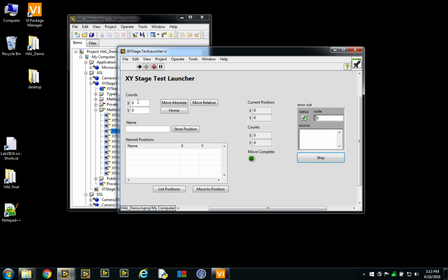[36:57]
I can probably just, for the sake of it, add my stage simulated, and my simulated class is extremely simple. It's just overriding the read position, where we do some maths to basically, from the last time that we've called, we iterate based on the velocity, and that gets converted to counts and position. This little effect will make sure that we can retest our XY stage, but this time by saying that we want to use a simulated. Instead of calling our method read position here that gets the coordinates, the instantaneous target, it's going to basically simulate a movement.
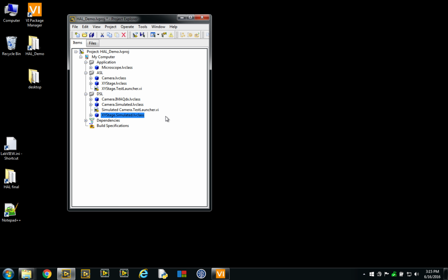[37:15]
So I'm going to go to 50 and 50 and move, and you see that's the only difference. And so that allows me to quickly determine if my timeouts work correctly. Now this seems like a useful feature to test our application. I think at this point, before I go into integrating this into the microscope, what I'd like to do is go back to our UML diagram and discuss a bit about unit testability of this architecture.
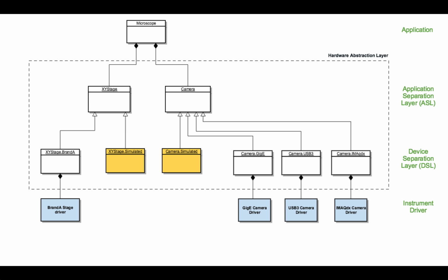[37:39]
So we're back with our UML diagram, which has been laid out a little bit differently just for convenience. I've had the camera simulated and XY stage simulated that we've introduced in the last segment, and we were talking about unit testability of a good hardware abstraction architecture. There are three places where we want to create unit tests. Now, if you want to test within the hardware abstraction layer, you will create device-level unit tests, a little bit like our test launcher for the camera, where we swap between camera simulated and a camera IMAQdx. You can exercise unit tests directly using your camera simulated class and validate that the camera abstraction works correctly.
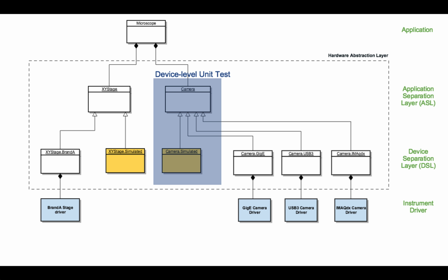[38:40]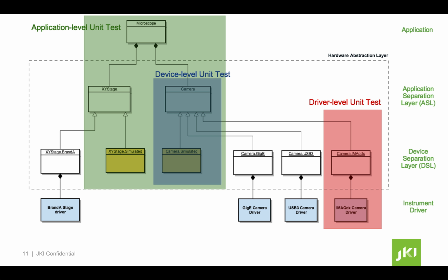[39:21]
Now, the next test is to do a driver level unit test for each of your modules that will be swapped for a camera simulated. And obviously these two tests can be combined once you do a system level test where you have a camera with actual hardware connected. So using your favorite unit test framework, either the NI unit test framework, JKI's VI Tester, or Caraya, you can develop good, solid, reproducible unit tests here.
And the third one is really an application level unit test, where once you've validated that each individual application separation layer was functioning properly through the use of different driver level or device level unit tests, it makes sense also to produce an application level unit test where you will exercise your API from the microscope to the camera, from the microscope to the XY stage, or whatever other subsystems you might have.
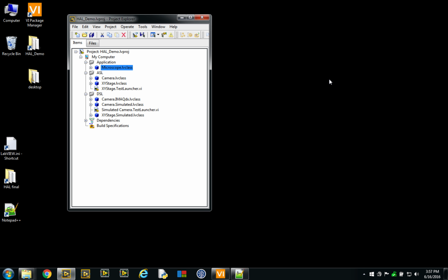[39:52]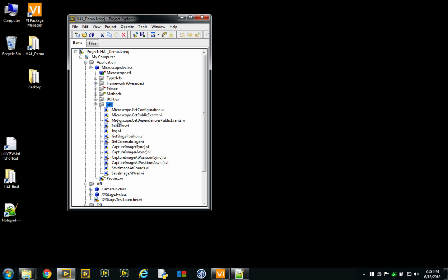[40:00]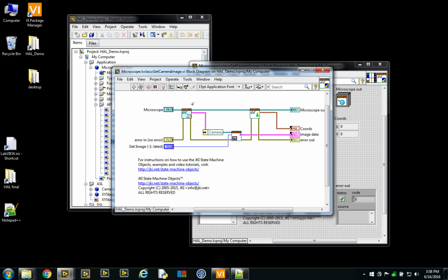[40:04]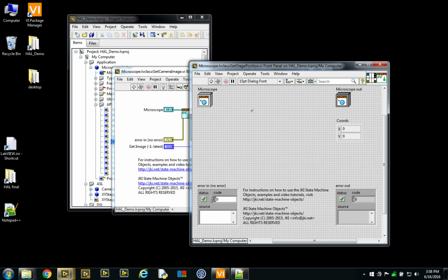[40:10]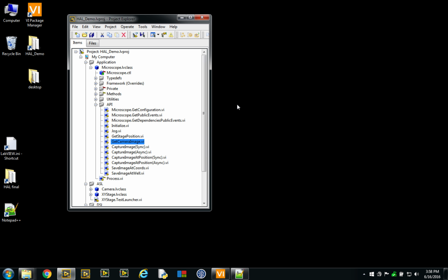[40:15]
And this finally leads us to integrating our XY stage and our camera into our microscope. We had already seen that our public API was set to go into fetching the dependency for a camera and performing just logic, and the same thing for coordinates, where coordinates would do the same for the XY stage. And so we already have kind of a working application in a way.
By integrating the public API of the camera and the XY stage, there's not much the microscope needs to do apart from just following basic instructions of move to certain coordinates on the stage and then snap an image, return through the user event whatever has been shown there.
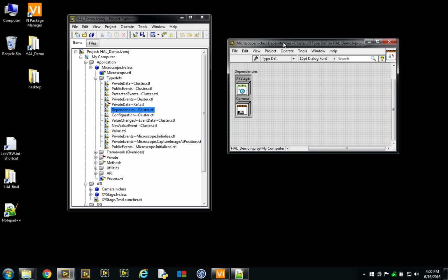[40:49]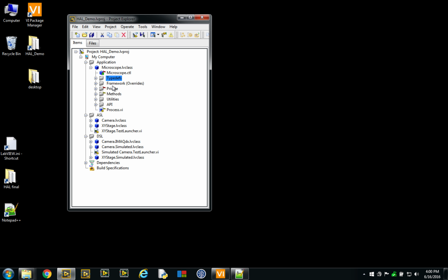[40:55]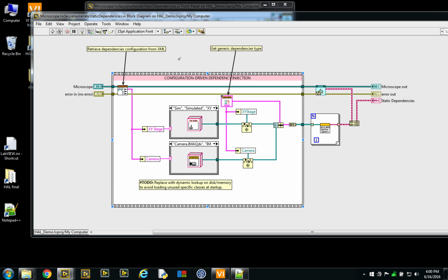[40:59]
As part of the framework of state machine objects, our microscope defines certain dependencies, which are a generic stage and a generic camera, and then we can override with our own factory or configuration-driven dependency injection. In this case, we have a hard-coded dependency injection instead of a dynamic lookup on disk, like a plugin architecture. This is where basically we'd enumerate our static dependencies and get the appropriate class from disk, casting it to the more generic, and then declaring that as a dependency of the microscope.
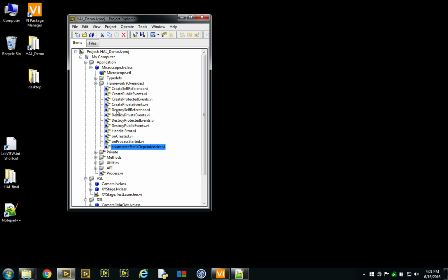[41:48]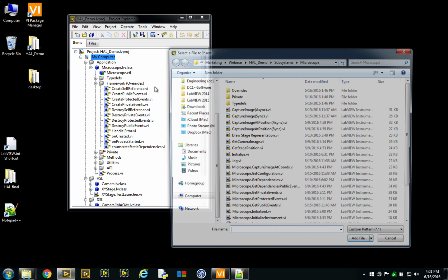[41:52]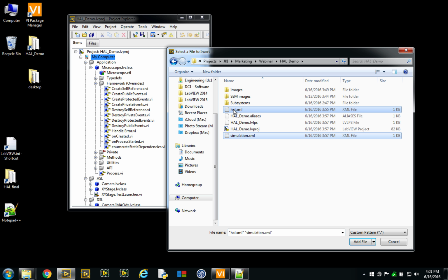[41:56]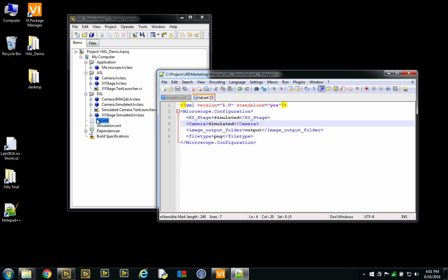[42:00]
Now, here, as I said, they're hard-coded, and the configuration file tells us which one we should look for. So we have the simulated camera, we have the simulated stage that we can interchange, and I think I should probably add the files. This is where I would define my dependencies here. If I said not simulated, we should get instantaneous movement, and simulated will get the simulated images. Now the simulated images will be fetched from my SEM images folder.
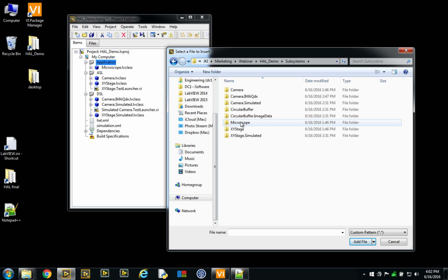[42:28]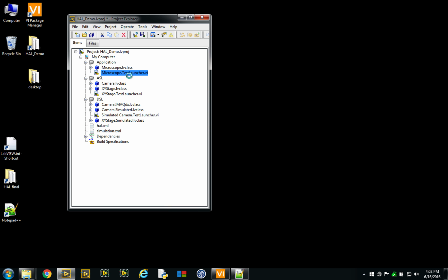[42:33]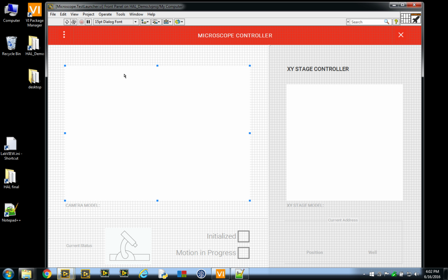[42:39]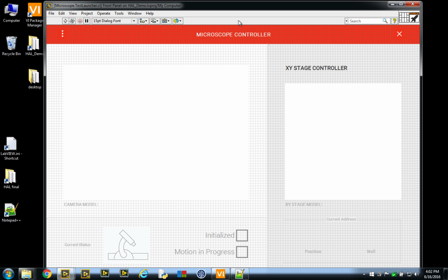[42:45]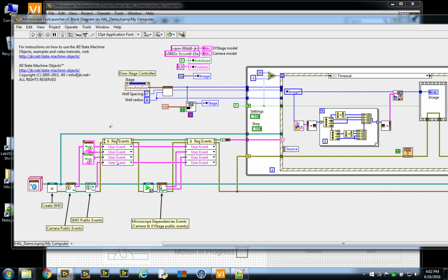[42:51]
I'll go to my subsystems for microscope, and as usual we have our test launcher, which we've asked our in-house designer to help with because I'm not that good with user interfaces, but basically he's helped me construct a very simple UI. All it does, and again you'll recognize the pattern, is we create a microscope SMO, and then we look for microscope public events. This is actually an error. And then we start our microscope process.
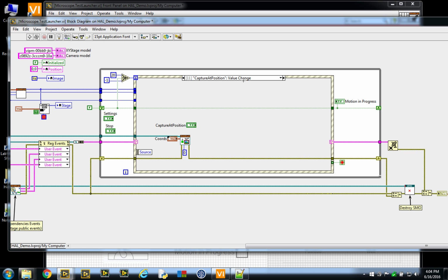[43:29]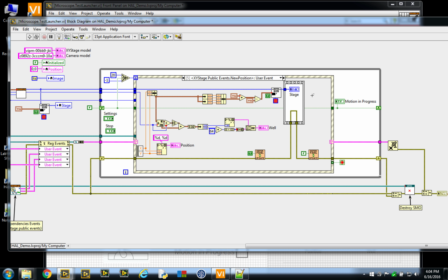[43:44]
The starting of the process will launch all the dependencies. In this case, we have the camera and the XY stage dependencies. So after we're started, the dependencies will be ready to give us their public events. So we're going to monitor those public events as well. And then the rest is really about exercising our public API, just like we've done with the camera and the XY stage again. So here we have a capture image at certain coordinates, and we can capture the image immediately. So whenever there's a new position event from the XY stage, we will calculate on the picture control and do an overlay to just show where the stage position is at.
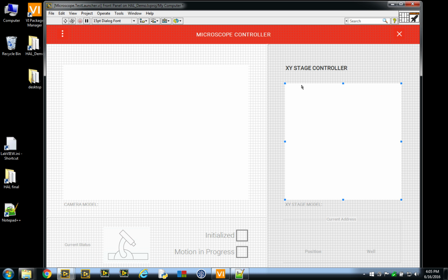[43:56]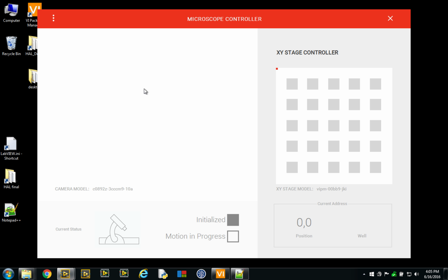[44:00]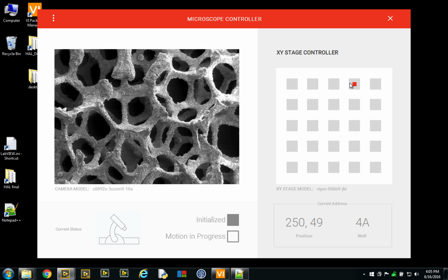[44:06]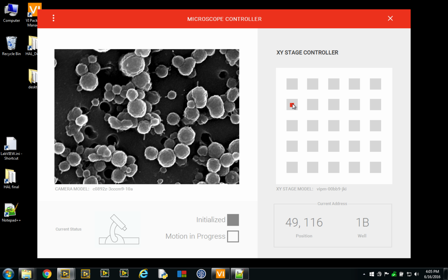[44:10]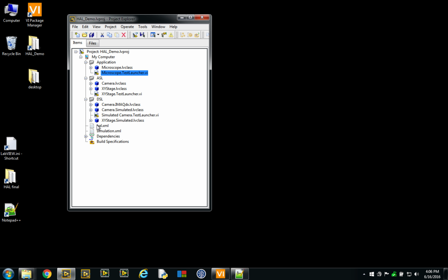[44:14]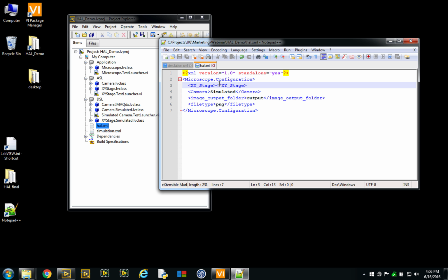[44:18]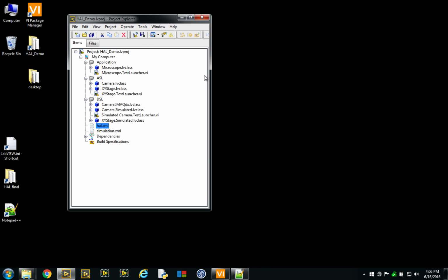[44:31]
We're initialized, and we're acquiring pictures. But there's something missing here. We really want to have our simulated movement. So I'm going to change my hardware abstraction dependencies here for a simulated XY stage. And we're still going to look at the SEM images.
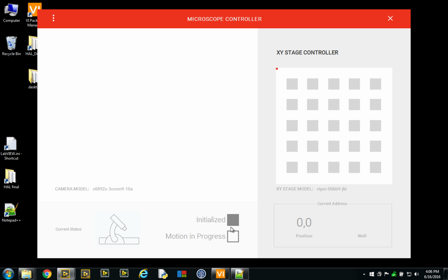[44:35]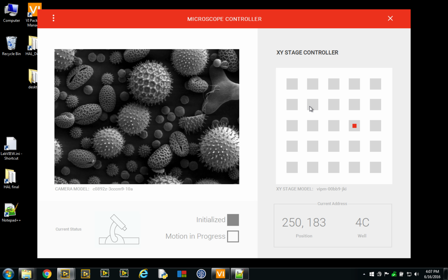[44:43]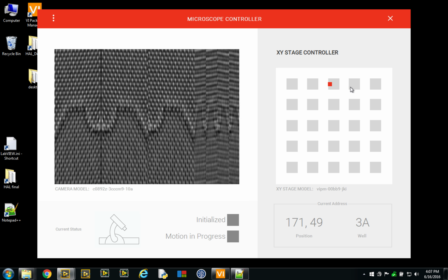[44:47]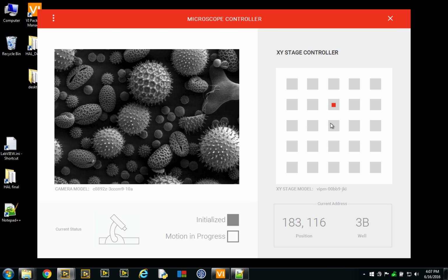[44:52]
Going to relaunch this here. Once I'm initialized, I can move. Motion is in progress. As soon as I reach the destination, I'll capture my image. And there we go. We've successfully created a microscope controller and ran our entire application using simulated data through the public API that we've designed beforehand.
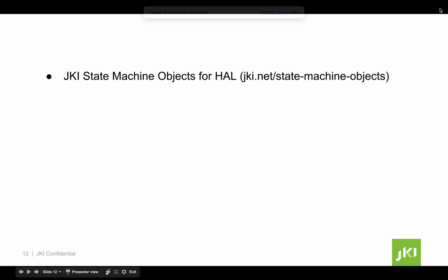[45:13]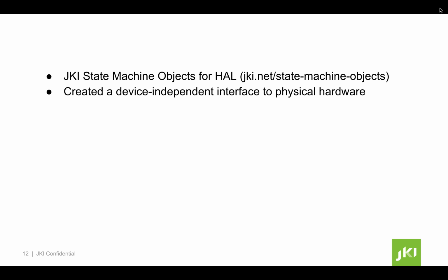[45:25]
This concludes this presentation about hardware abstraction layers. In summary, we've seen that we can use JKI state machine objects to create a simple and solid hardware abstraction for an instrument with multiple components. The hardware abstraction layer provided us with many benefits. We successfully created a device-independent interface to physical hardware by dividing our software into an application separation layer and a device separation layer.
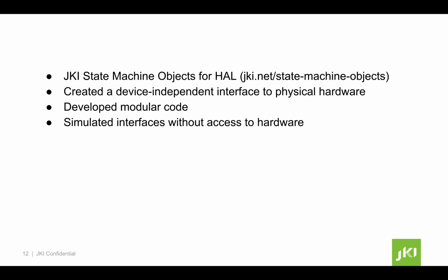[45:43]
We were able to create modular code that allowed us to swap hardware components seamlessly from a configuration file. We also showed that we could run simulated devices and test our workflow, making our software inherently unit testable. By taking time to design a generic public interface, we have prepared for future changes that will provide flexibility and minimize risk associated with instrumentation projects.